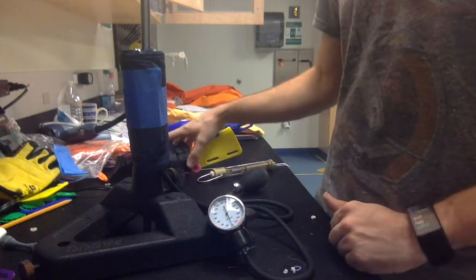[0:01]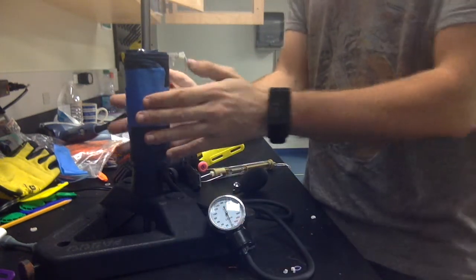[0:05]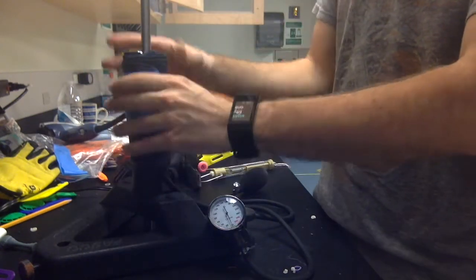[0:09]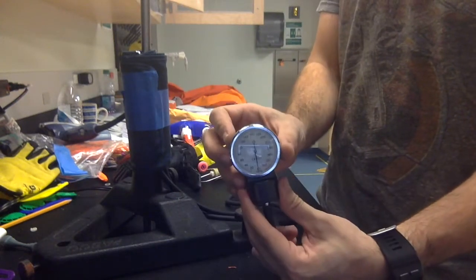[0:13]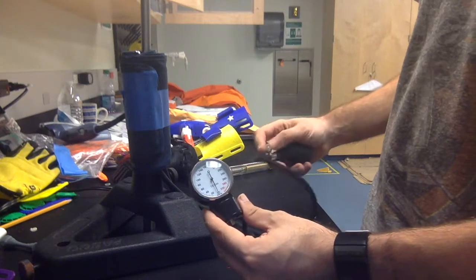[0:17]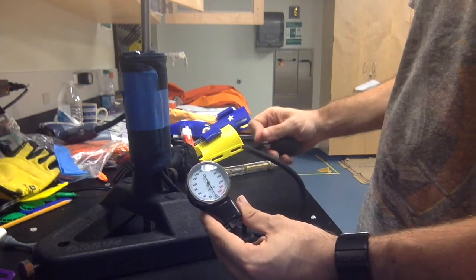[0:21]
for e-NABLE hands. And what we're using is just a modified blood pressure cuff. So I've taken the cuff and I've kind of rolled it into a cylinder and secured it to this little stand. And so we have our blood pressure cuff. And what you're going to do is you're going to inflate it up to 20 millimeters of mercury as a starting point.
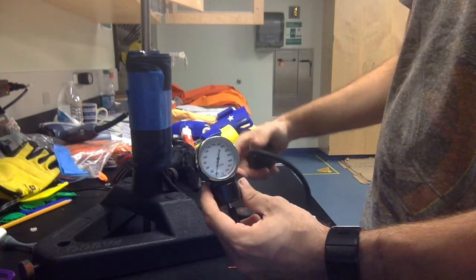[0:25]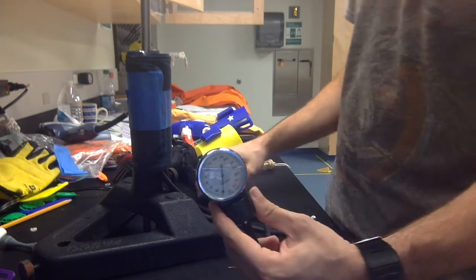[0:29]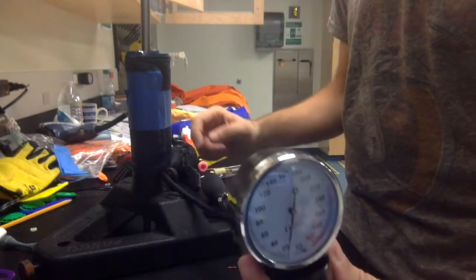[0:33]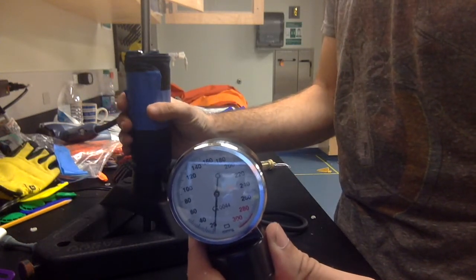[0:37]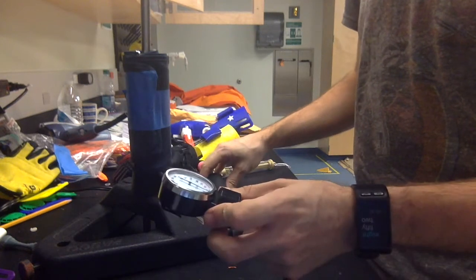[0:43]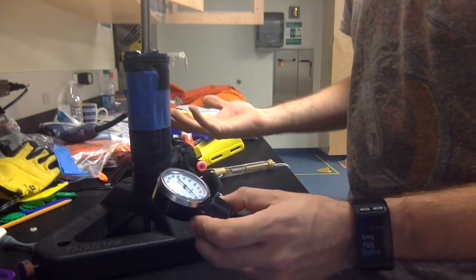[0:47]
So it's going to poof up. We got it up to 20 millimeters of mercury. What you're going to do is you're going to assess the grip strength by actually squeezing this. So if you look, I'm at 20, and if I use my hand and I squeeze it just a little bit, it's a very light squeeze, I can get it to go up to about 40. So that's how we're going to actually assess these hands.
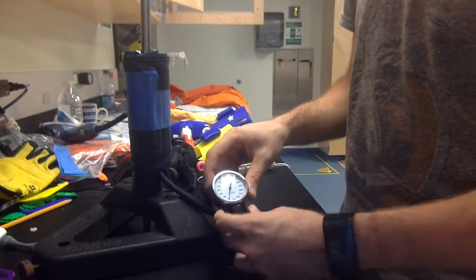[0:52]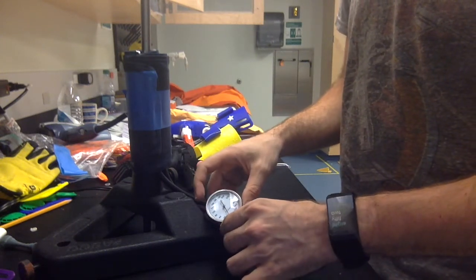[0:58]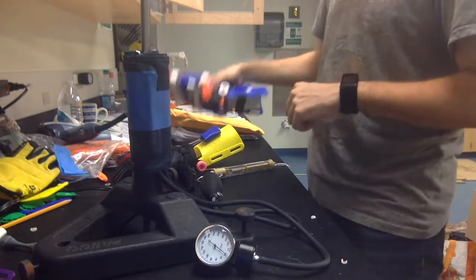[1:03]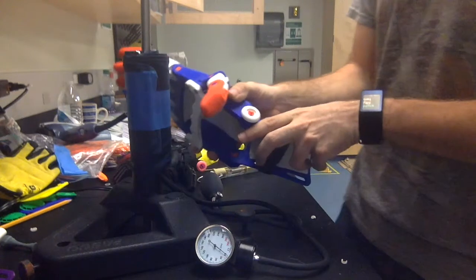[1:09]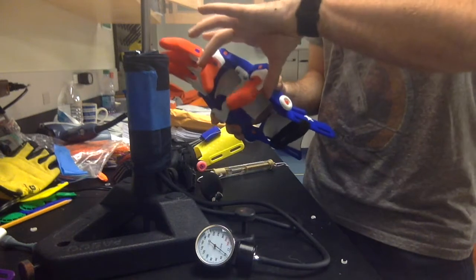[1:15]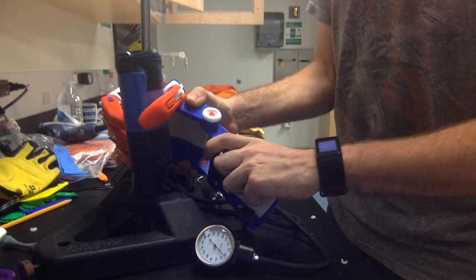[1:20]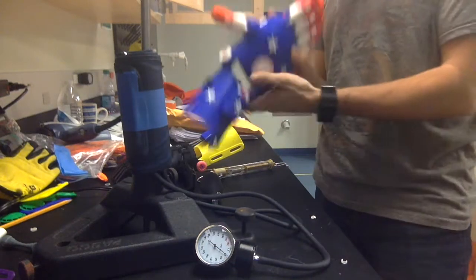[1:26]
We're going to see how many millimeters of mercury we can get to move by squeezing it with an e-NABLE device. We can compare that to our own actual grip strengths. You keep your eye on the dial. You take something like maybe a Phoenix hand, and we're going to grasp it. We're going to orient it so that we're getting the maximum grasp, so that we're kind of getting that pinching between the thumb and the index finger to really squeeze this device. And we're going to squeeze. And we see that we get about 10 millimeters of mercury out of the Phoenix hand. So that's basically the grip strength.
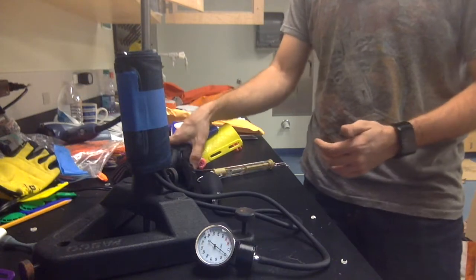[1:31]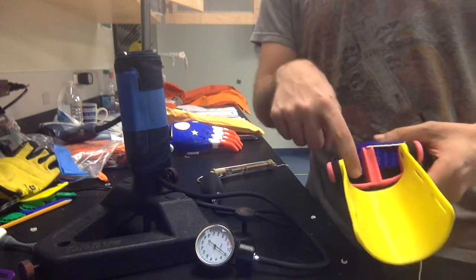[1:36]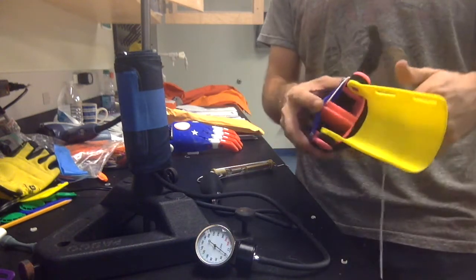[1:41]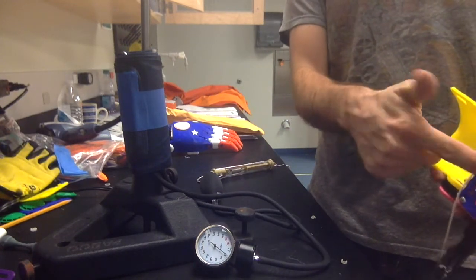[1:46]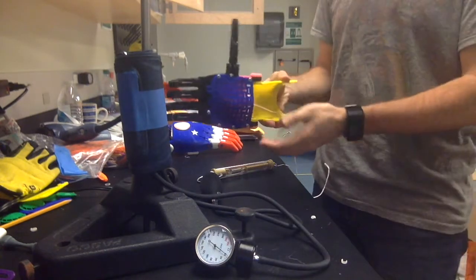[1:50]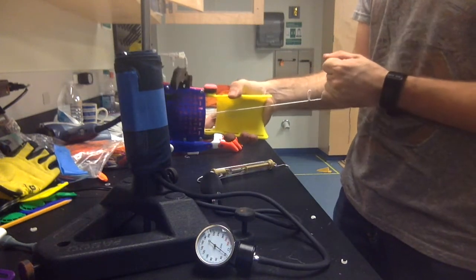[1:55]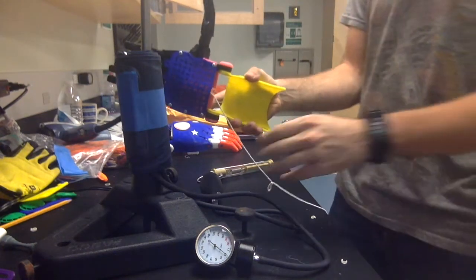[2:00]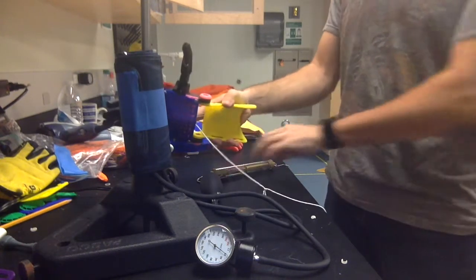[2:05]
Now, if we want to go a step further, we can actually use this little kind of pulley system that we've created that screws into a Raptor palm, and we have a design for the Phoenix as well. And then you can run a string through that's going to come around and underneath and come out the back. So this allows you to activate the hand completely by holding it just at the gauntlet, and you just pull the string. So the advantage here is you don't have to disassemble the hand to figure out what force is actually going into actually pulling the back of this to get out the grip strength that you're getting at the end.
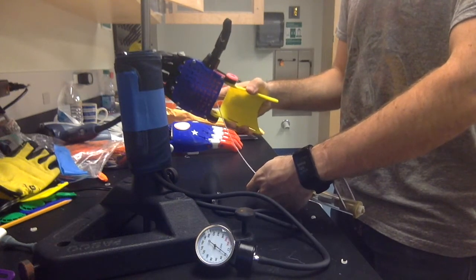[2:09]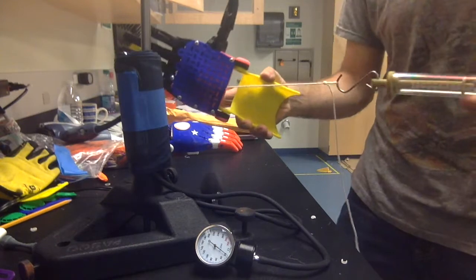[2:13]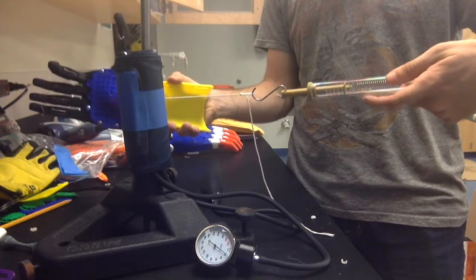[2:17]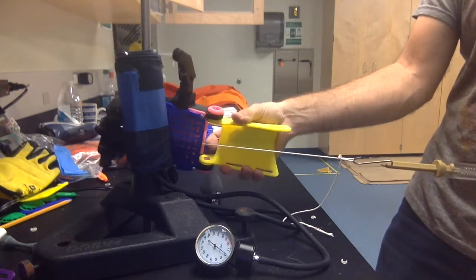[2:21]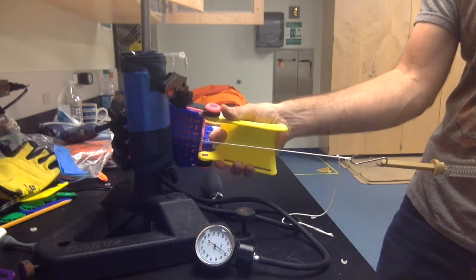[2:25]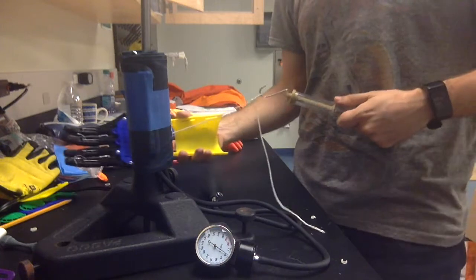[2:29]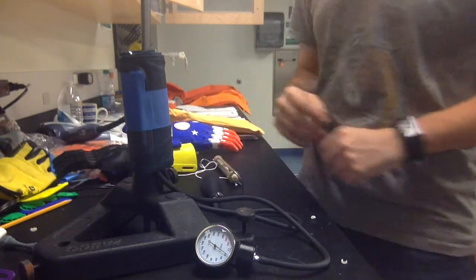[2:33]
So we can attach something like a spring scale. This is a spring scale. We actually have nice digital ones that we use, but you could use just a spring scale that kind of gives you a measurement of the forces. And you kind of pull on this, and as you pull on it, you can get your grip strength, and you can get your hand to close around your actual blood pressure cuff. So you can measure grip strengths that way as well.
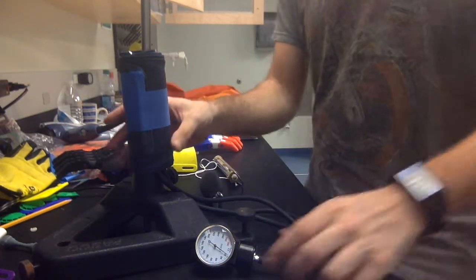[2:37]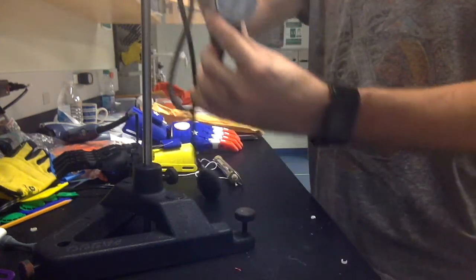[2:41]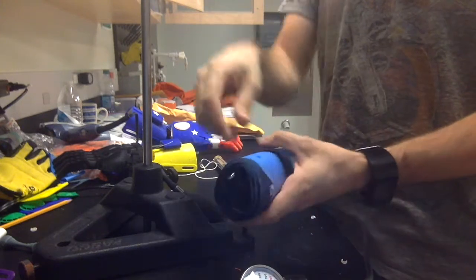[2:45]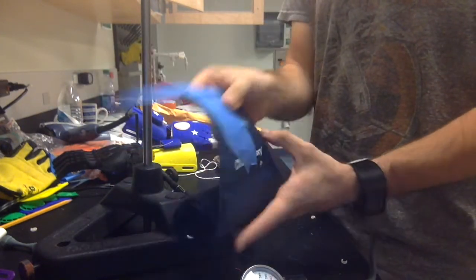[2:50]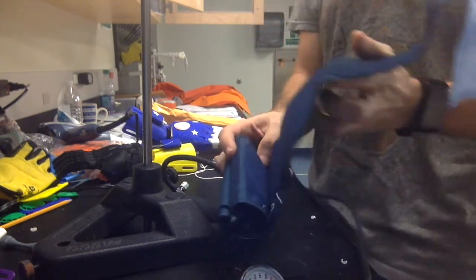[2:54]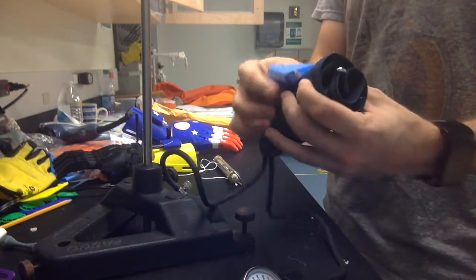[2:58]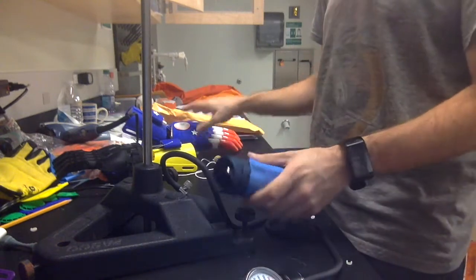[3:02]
So how do we do this? How do we get the blood pressure cuff in the right format? So this is just the regular blood pressure cuff, and all I did was roll it into a cylinder and secure it with some blue painter's tape, because that's what we have in our lab for our printer beds. So it's very simple. Anybody can do this. If you have a blood pressure cuff, you can kind of get an idea of what kind of grip strength you're getting out of your e-NABLE devices.
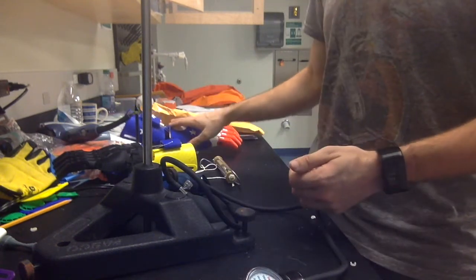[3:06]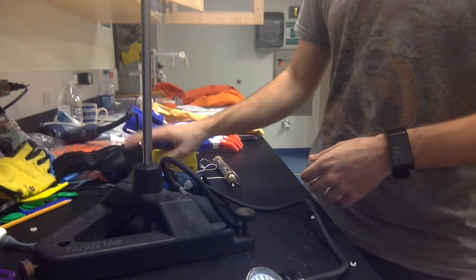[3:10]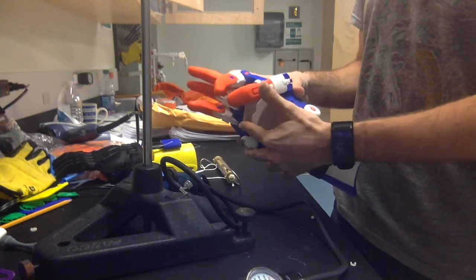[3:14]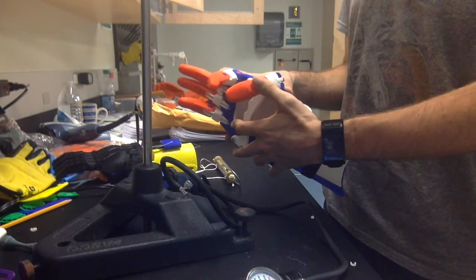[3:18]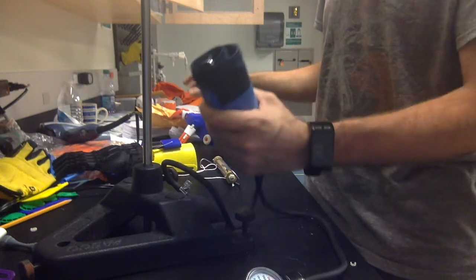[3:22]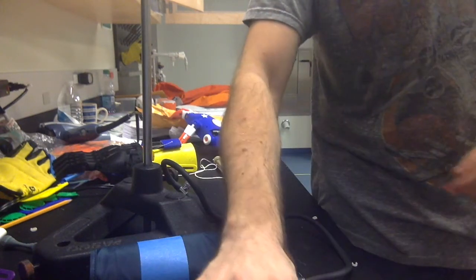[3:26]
We are finding about 10 millimeters of mercury for a Phoenix hand, and about 5 or 6 maybe out of a Raptor hand, largely probably because of the thumb positioning. So we're getting more kind of resistance between the thumb and index finger to give you that good, strong grip.